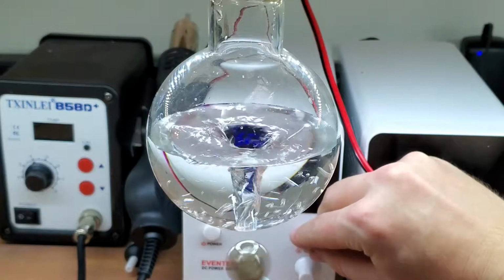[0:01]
Many reactions require a magnetic stirring hot plate. I'm forgetful, so I'd like one that can be programmed with a consistent schedule. Also, I'd like to do a little cooking and test some recipes.
Hey Chris from a couple months ago, can I spend $1,400 on a magnetic stirring hot plate? I don't have the money for that.
Well, guess I'll have to build it myself. Seems straightforward enough. Are you ready to watch me fail? Repeatedly? Because this is 10 Tries.
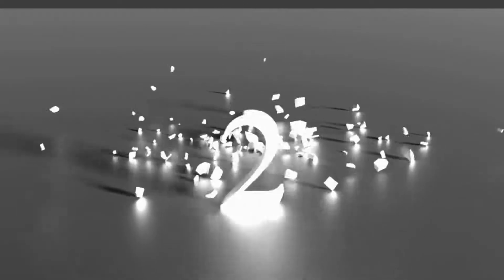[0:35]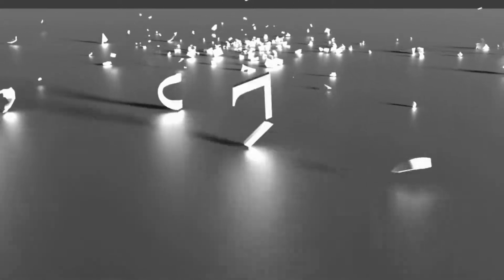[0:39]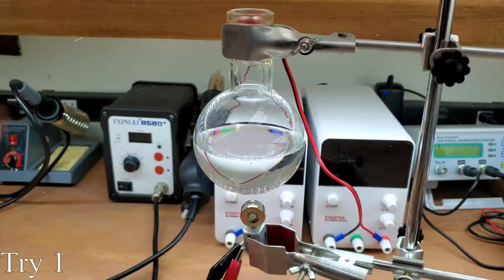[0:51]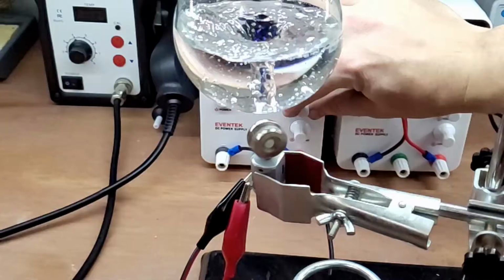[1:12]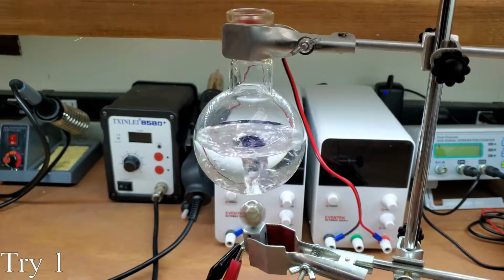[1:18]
Magnetic stirrers work by rotating a magnetic field to spin a magnetic stir bar in a container. I want to break this issue down into parts. In my first attempt, I tackle stirring. I bought some cheap Teflon coated stir bars and for the rotating magnetic field, I designed a setup with a simple DC motor that spins magnets. It is simple and it sort of works, but there's no speed control and the motor wears out the coupler after just a bit of use.
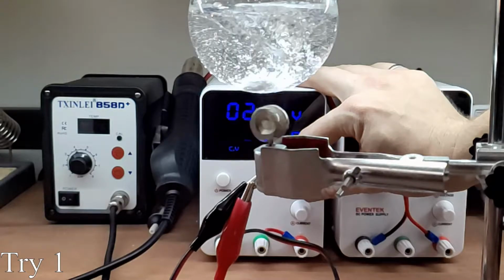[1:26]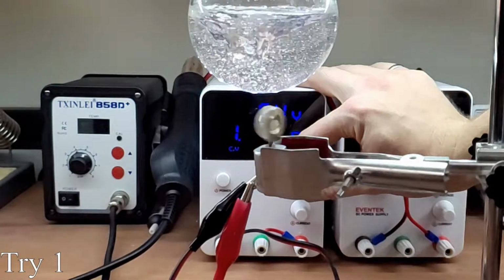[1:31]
Also, it can't spin too quickly or the stirrer could use a little work, but we'll come back to that.
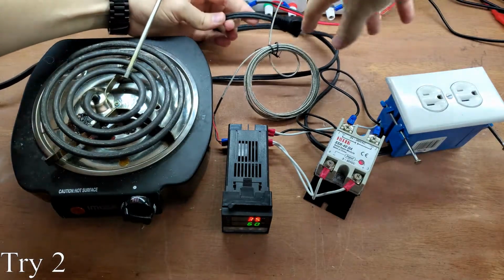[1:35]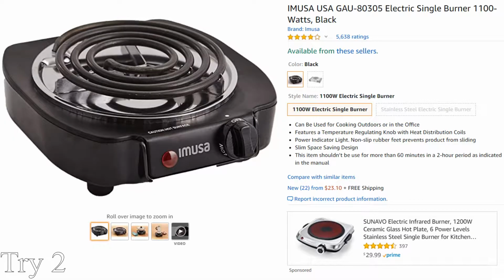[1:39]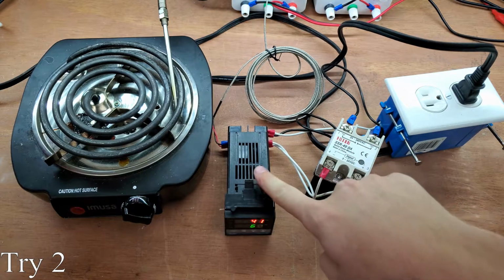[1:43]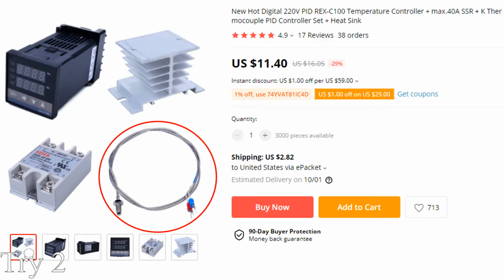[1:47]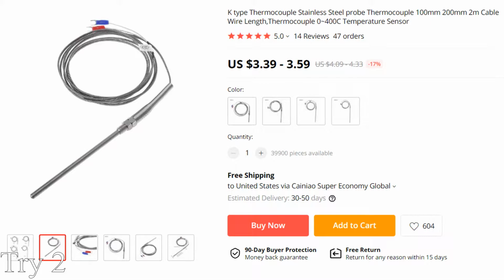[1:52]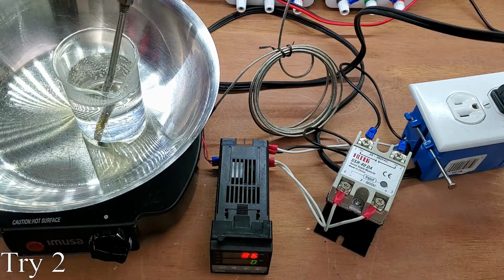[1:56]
While it may not be an option on many hot plates, I would like some decent temperature control. For the actual heating element, I picked up this cheap single burner for about $12. My control will be a PID temperature controller for another $12. The thermocouple doesn't look like it can be submerged in a solution, so I picked up one that can for about $3. It overshot the set temperature quite a bit, but after it settled, the temperature was very stable.
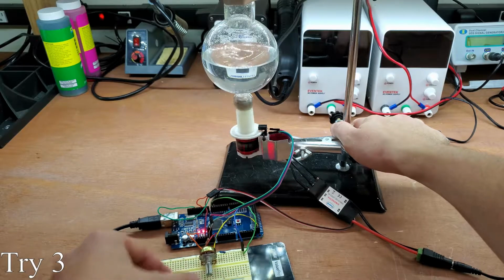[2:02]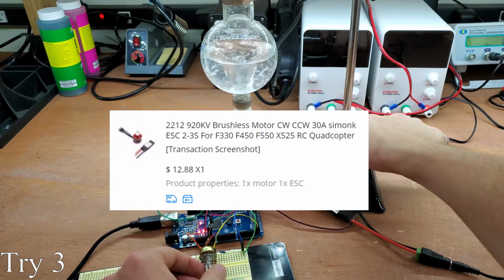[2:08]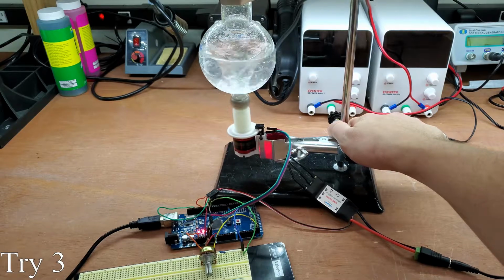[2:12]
The motor I am using doesn't have much torque and there's no speed control, so I printed up a few parts and bought a motor and speed control that is typically used for drones for $13. I designed and printed some parts to mount the motor, measure the speed, and mount the magnets.
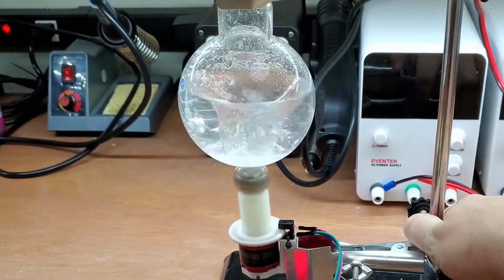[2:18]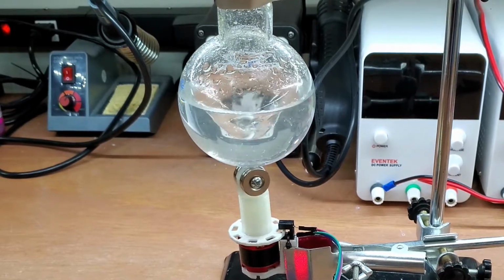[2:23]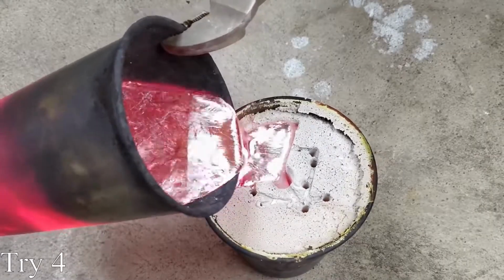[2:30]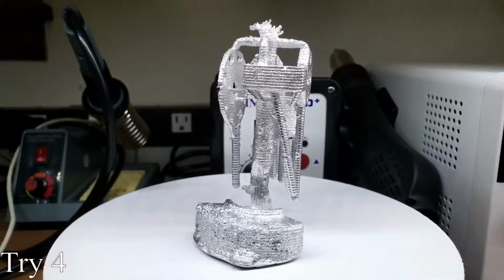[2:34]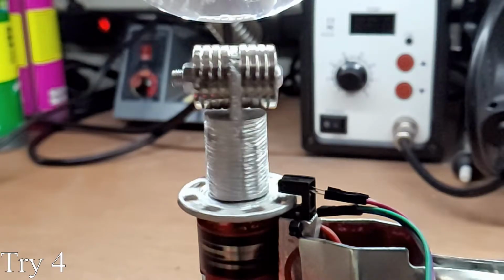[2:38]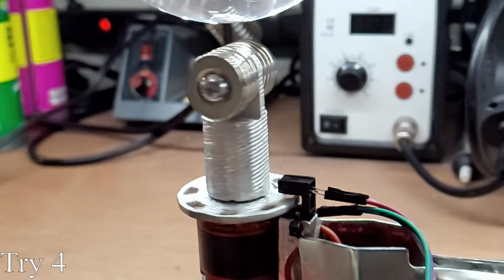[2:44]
While this works fairly well as a magnetic stirrer, there's no way the printed parts can withstand the heat of the hot plate. Using the Lost PLA casting method I showed in my first two videos, I made these parts out of aluminum. These parts should withstand heat much better. Also, I used my controller from Try 10 of my Lost PLA project and made a few modifications, so it's time to put it all together.
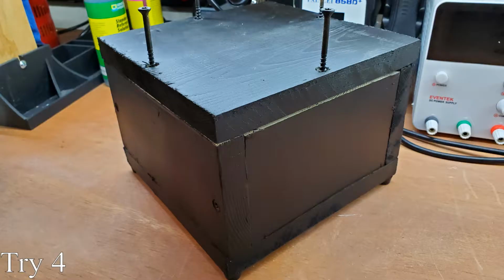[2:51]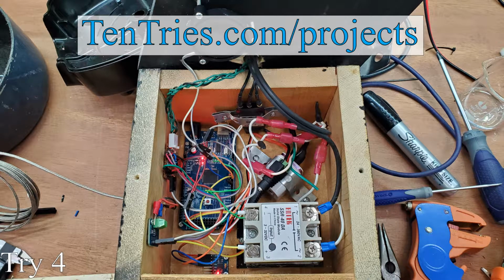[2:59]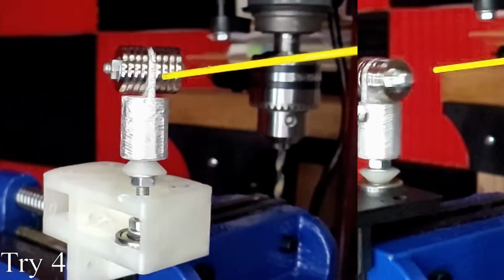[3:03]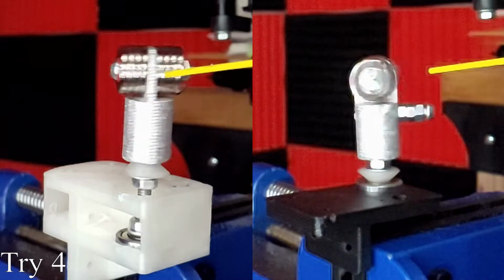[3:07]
I made an enclosure for the control circuitry out of some wood scrap I had laying around and painted it black. Then, I mounted everything inside with some wood screws. I'll be including wiring diagrams on the project page for this project on my site, TenTries.com. I added an accelerometer to help balance the magnet mount so it doesn't vibrate as much while it spins. That process was a little involved, so I'll have to make a separate video for the balancer itself.
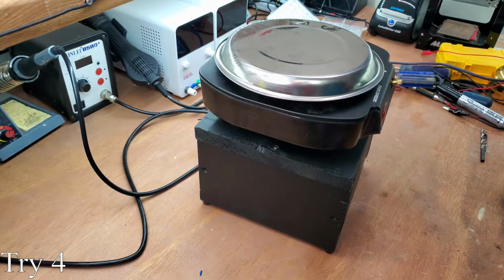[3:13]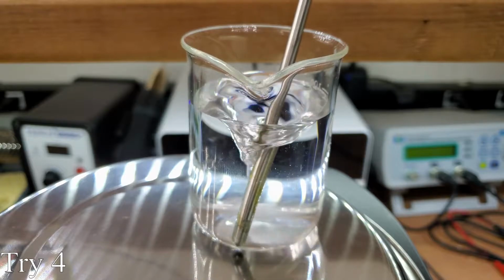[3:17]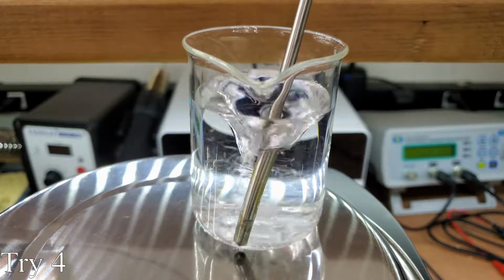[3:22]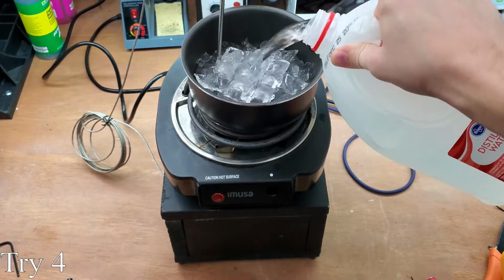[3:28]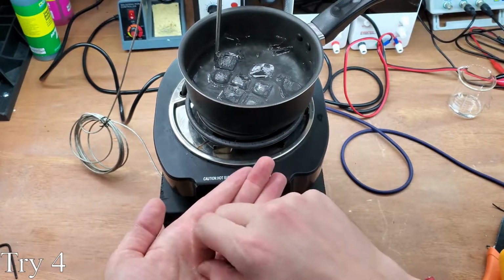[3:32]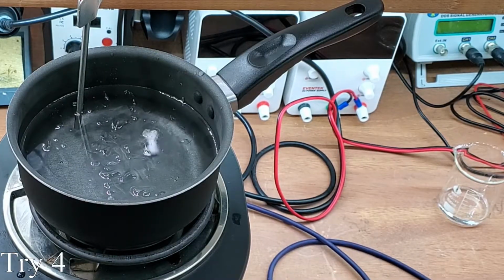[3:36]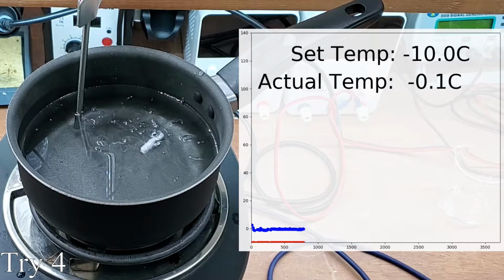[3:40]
Device can heat and stir well, so it's time to check the temperature accuracy. To do this, I compared the readings with the freezing point and boiling point of water. I added ice water to a bath and heated it until the boiling point while the Python program recorded the temperature. The idea here is that the temperature should remain at the freezing point of water, zero degrees Celsius, until the ice melts.
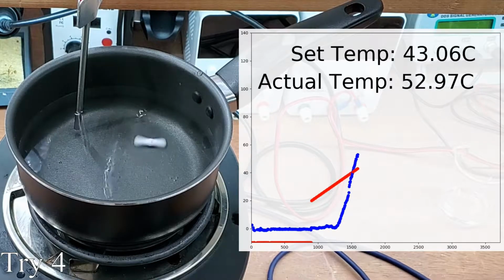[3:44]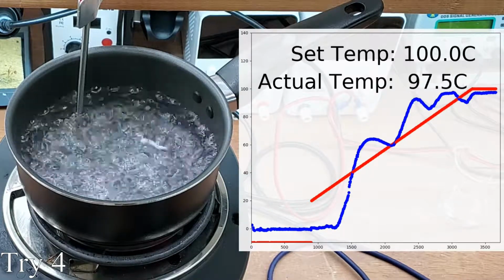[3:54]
Then, the temperature should continue to rise until it is at the boiling point, which should be around 98 degrees Celsius, since I'm doing this test at about 2,000 feet above sea level. The freezing point of water does not change much at different altitudes, because the water density difference is small when freezing compared to boiling. It seems the temperature was only about half a degree low for the freezing point and boiling point. That is pretty accurate.
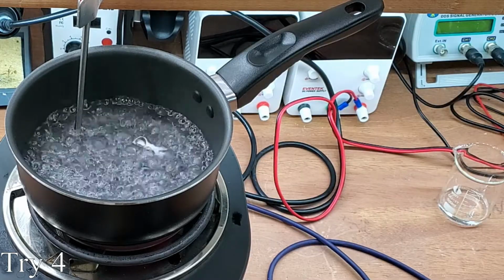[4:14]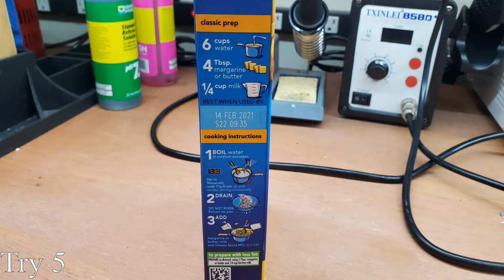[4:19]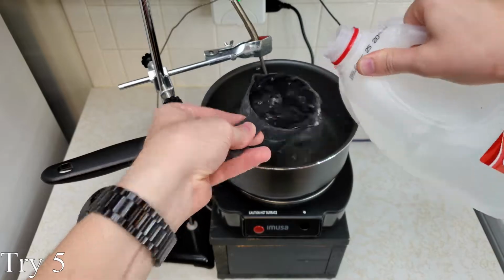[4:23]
If you'd like to calculate the boiling point of water where you live, I will include the calculator in the project write-up on my site. I'm going to do something that I've never done before. Follow a recipe. I programmed my hot plate to cook some mac and cheese.
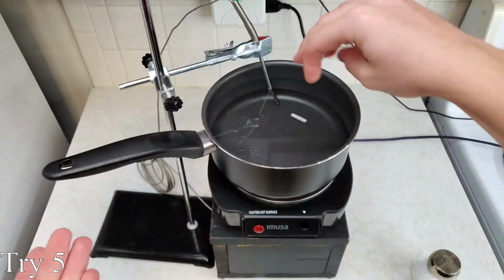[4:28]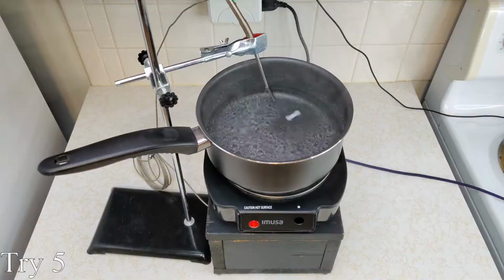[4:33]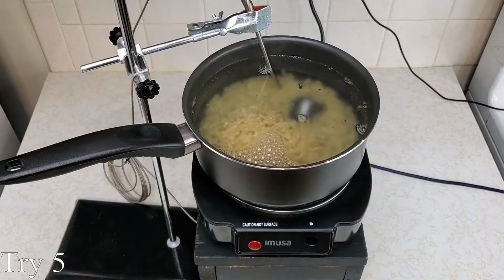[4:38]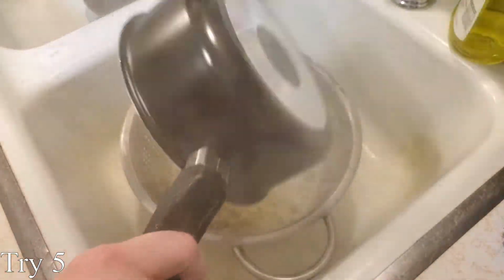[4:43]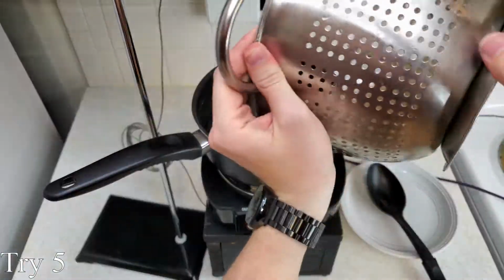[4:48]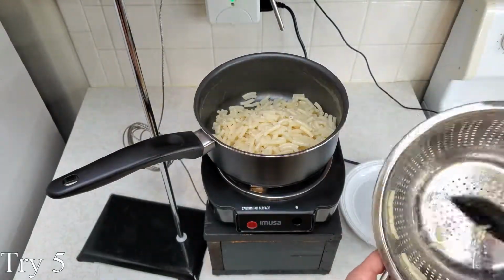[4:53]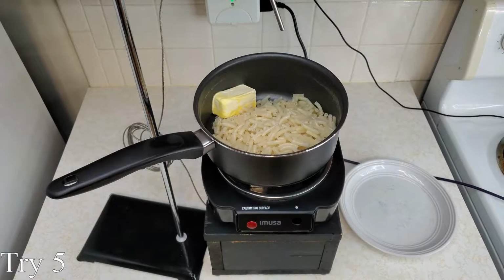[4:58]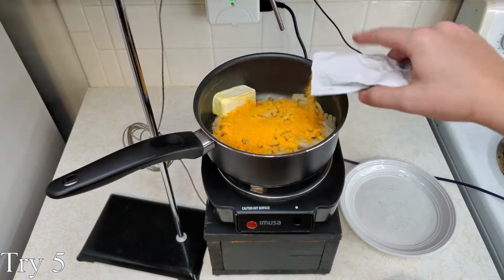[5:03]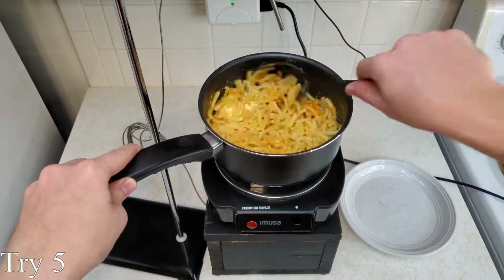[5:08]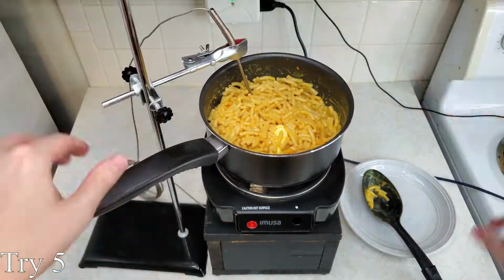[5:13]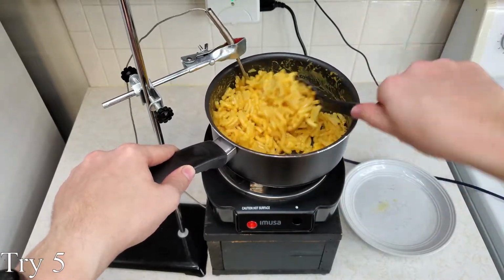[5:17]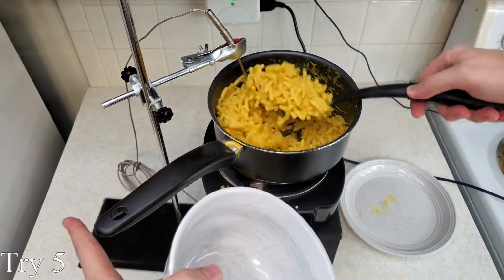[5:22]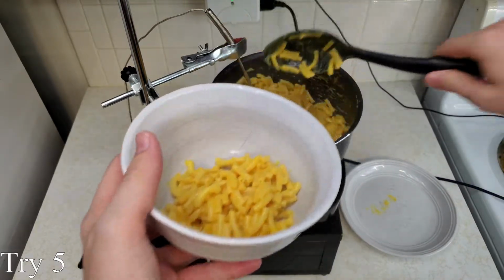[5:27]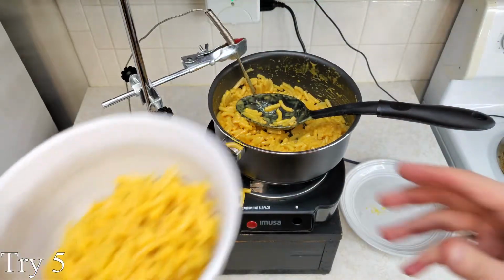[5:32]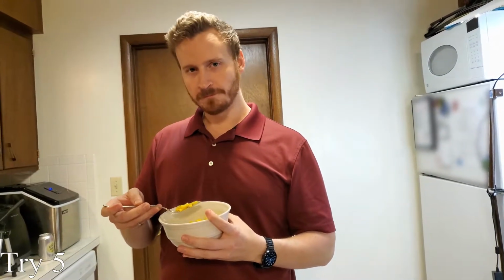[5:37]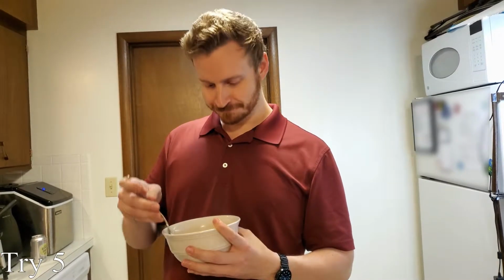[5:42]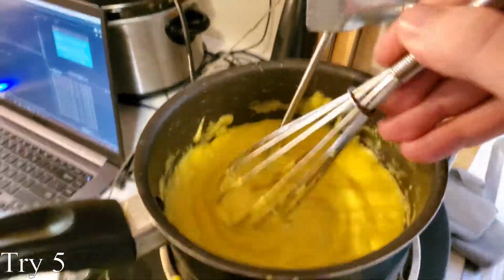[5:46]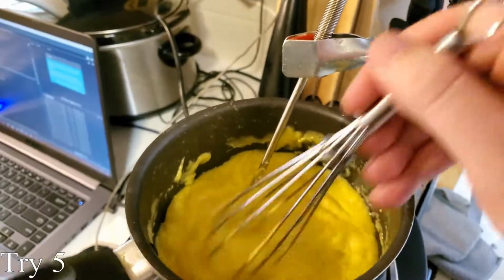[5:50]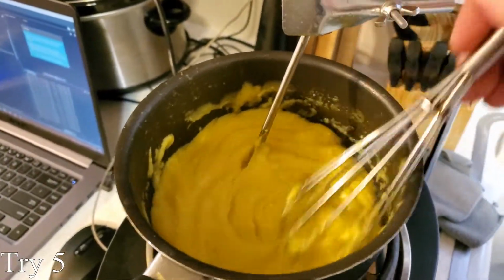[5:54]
All right, the instructions are right. I wanted to try cooking something a little more difficult. If you've ever cooked hollandaise sauce, you know it is incredibly easy to mess up. Well, precise temperature helps a lot.
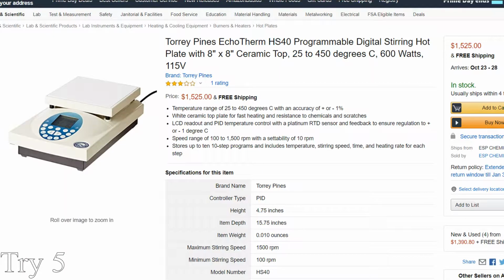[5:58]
All right, so for about $40, the price of some of the cheapest stirring hotplates, I have one that functions similar to a $1400 programmable stirring hotplate.